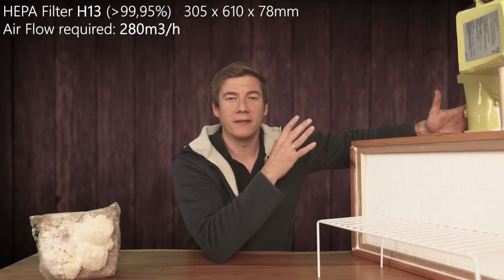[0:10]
Hey, it's Jens. Today I'm going to show you how to actually build a cheap DIY laminar flow hood.
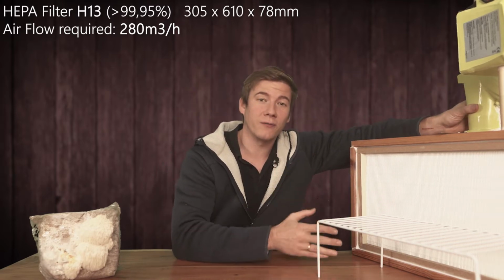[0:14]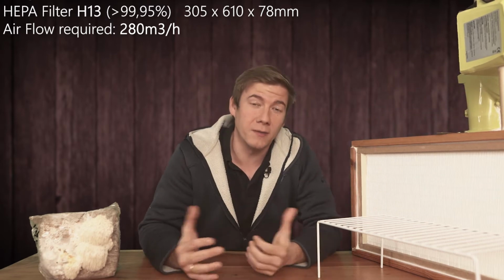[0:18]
In the last video, I covered some very important topics like how to choose the right components so that the laminar flow hood will eventually work. Because when the fan, for example, is not strong enough, you will have an expensive filter system, but still risk contamination. So today I'm going to focus on how to put everything together while keeping the costs as low as possible and make this thing work as well as possible.
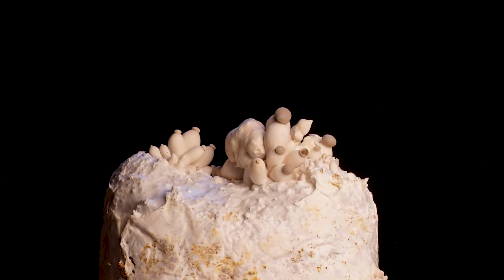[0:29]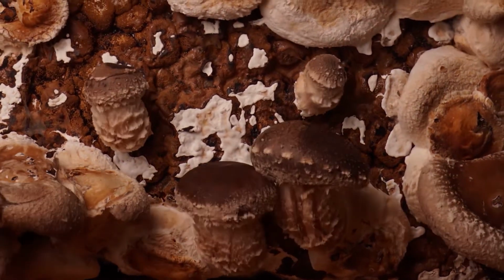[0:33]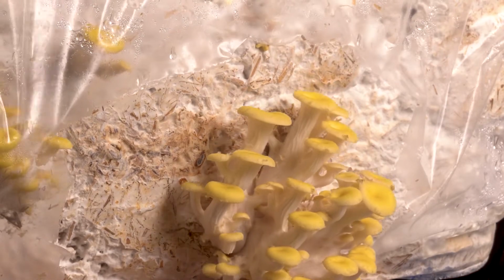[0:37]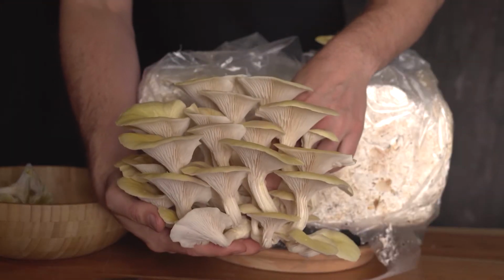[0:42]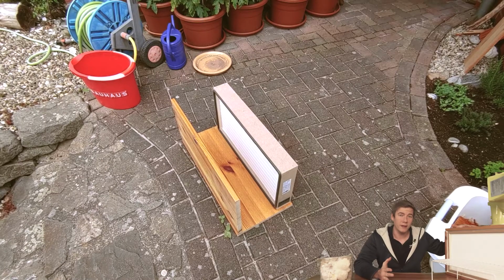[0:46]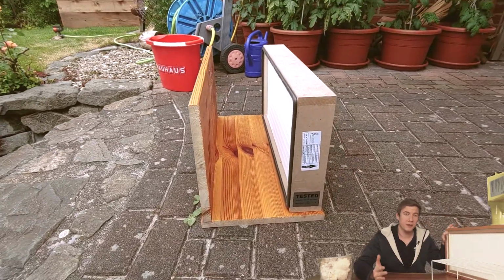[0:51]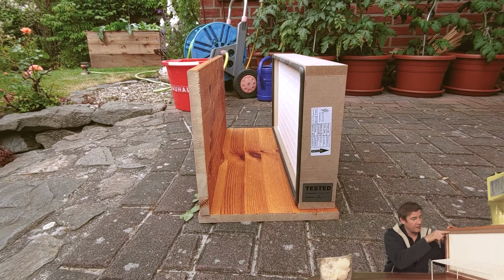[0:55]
For the case of the filter, I've used some old shelves out in my basement, so the case actually cost me €0. There's one thing that I have to point out, that is the sealing. Normally those HEPA filters come with a sealing, and here the sealing shows to the inside direction. Normally it shows to the outside direction. But then you need an additional layer of wood to press the sealing against, as it's shown in this example here.
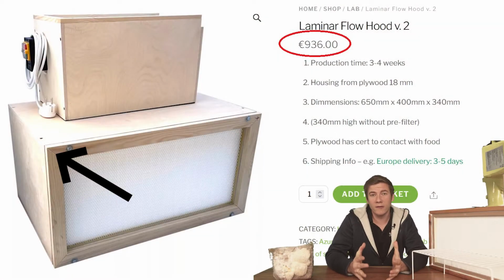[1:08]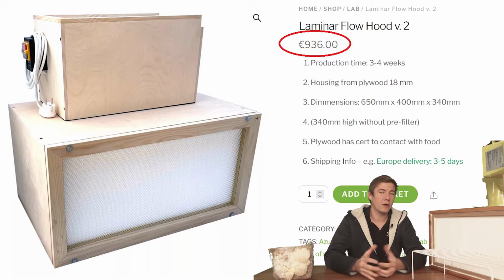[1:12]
Let's take a closer look at this laminar flow hood you can buy on the internet, and that costs around €1,000. And that is actually the reason why I have built this version. Of course, it does not look as professional as the one you can buy on the internet, but it works the same, maybe even better, because I have used a very strong fan here. So that's actually the reason for the video, because I don't, and I think you also don't want to spend €1,000 for a laminar flow hood of this size.
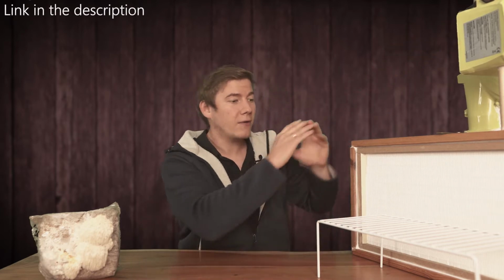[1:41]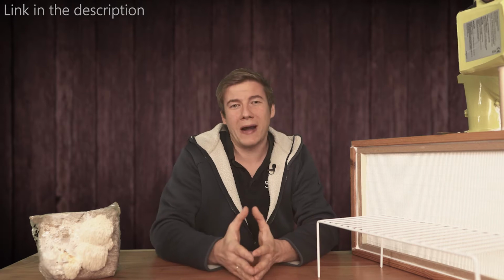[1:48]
That's why I've bought a filter for about €60 to €70 and a fan which costs about €100 on Amazon. So everything together will cost me under €200 for a laminar flow hood. I don't know, is that a lot of money? When you compare it to professional laminar flow hoods you can buy on the internet, I think it's a pretty good deal, and just 1 or 2 hours of work and you'll have your own laminar flow hood for under €200.
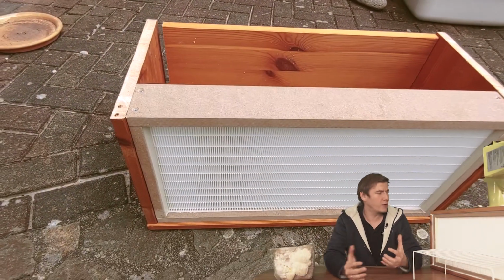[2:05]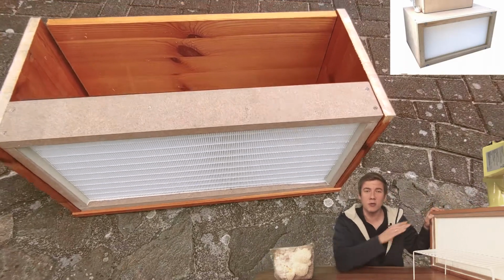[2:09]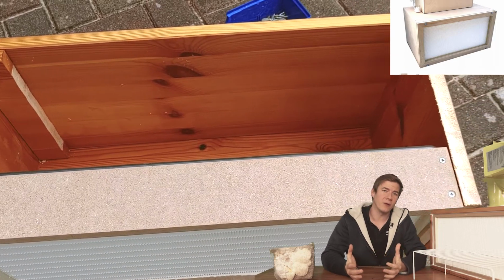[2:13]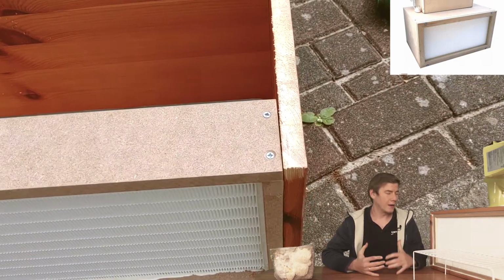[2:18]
So why did I put the filter in this direction? The answer is because I was actually just a little too lazy, and I think it is not necessary to build an additional frame because I've just used silicone to seal and glue everything together and it works the same. Yeah, it just saved me some time building this laminar flow hood when using silicone instead of a more complex construction. Let's talk about the basic concept of this laminar flow hood.
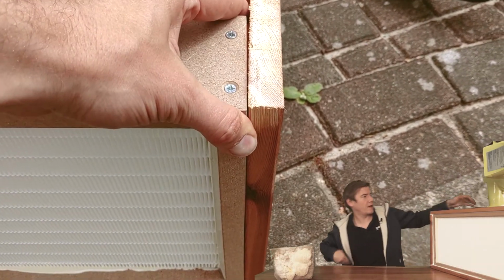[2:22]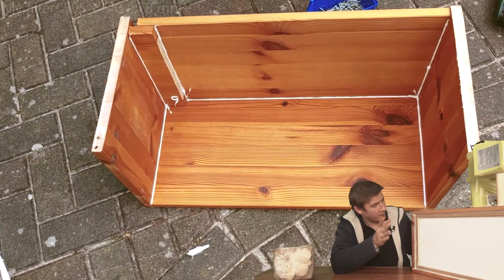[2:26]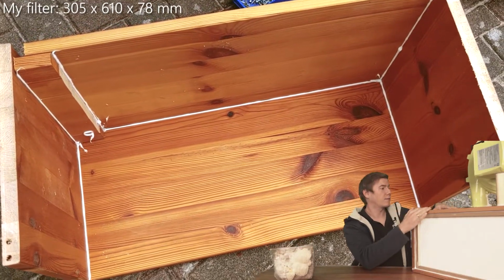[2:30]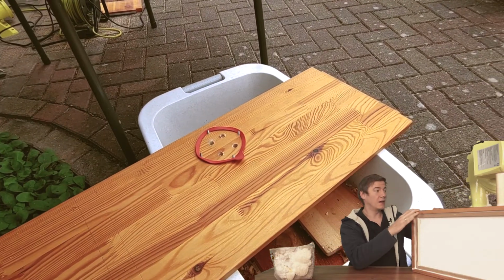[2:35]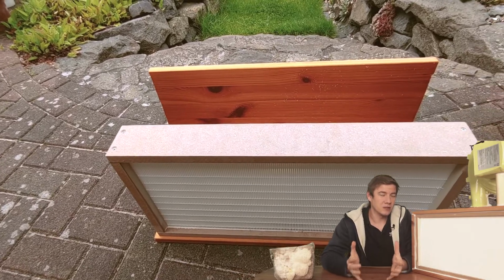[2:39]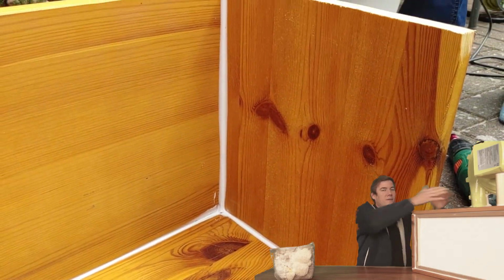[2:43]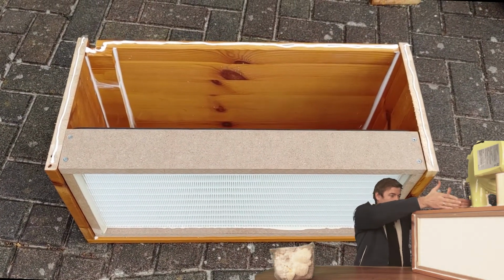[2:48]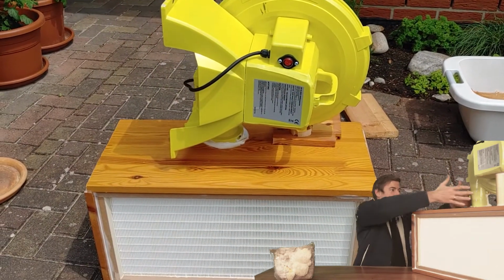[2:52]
Let's remove this for a second. We have here the filter with a depth of about 7 centimeters. So you need a base plate of about 30 centimeters so that there is enough space to mount the fan on top of your laminar flow hood. I've seen extremely huge laminar flow hoods on the internet, but I think you just need this much space. Just make sure that the fan has enough space here to push the air through the filter. So the gap between the filter and the back of your case should be bigger than the depth of the fan.
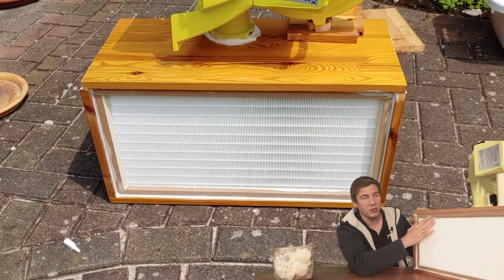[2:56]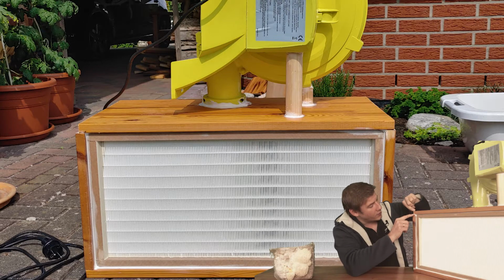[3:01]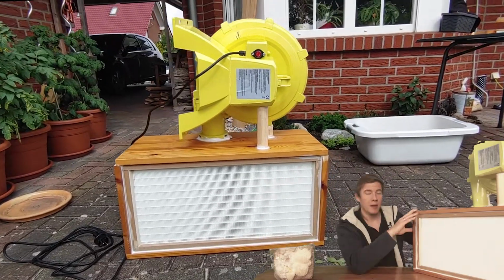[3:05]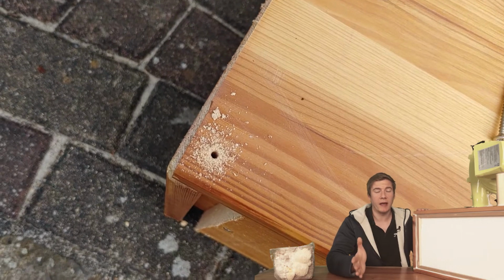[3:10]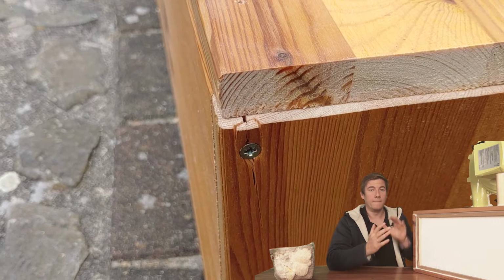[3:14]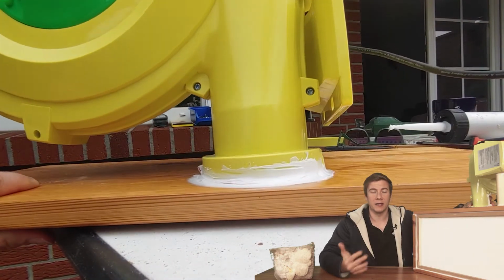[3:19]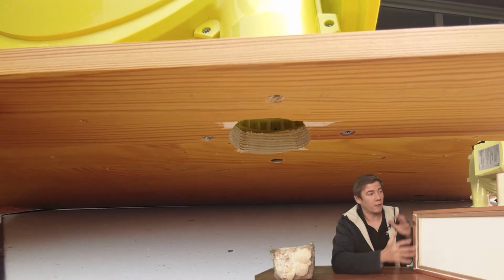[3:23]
For the frame, I've just measured the length and the height of the filter, which is 30 centimeters times 60 centimeters. So I've added a material thickness to the height and just cut out the wood for the frame. Before screwing everything together, I'd recommend to drill some holes depending on the wood you use. Otherwise, this happens and yeah, you have to seal everything again. Then I've cut a bigger hole on the top for the fan and sealed and glued everything together with silicone. So I've also used some screws, but silicone is really the most important part of this laminar flow hood because this prevents the flow hood from leaking.
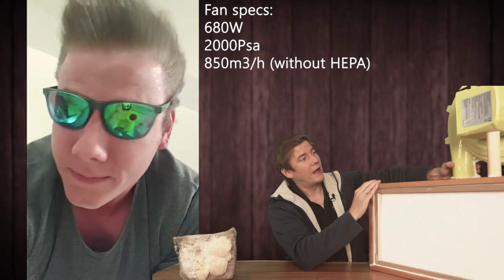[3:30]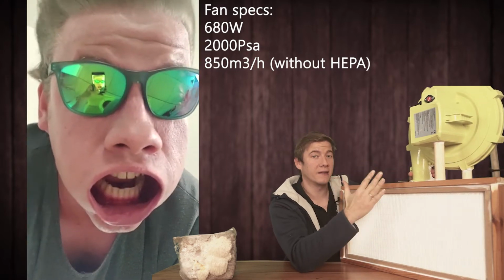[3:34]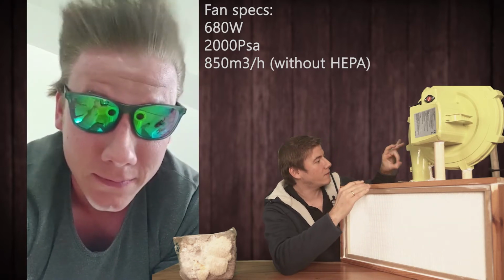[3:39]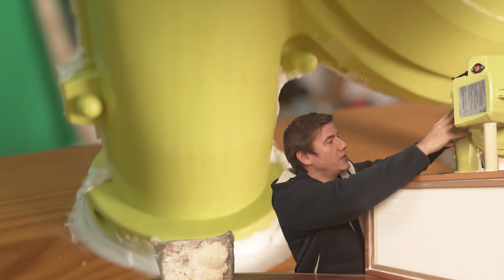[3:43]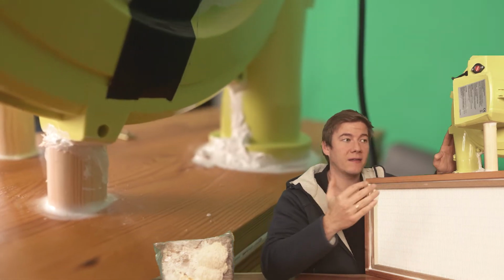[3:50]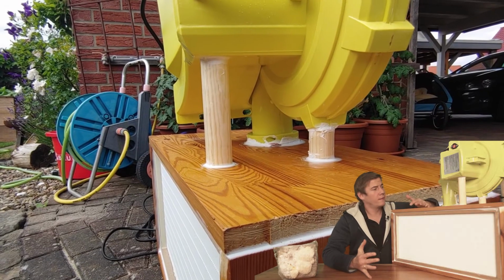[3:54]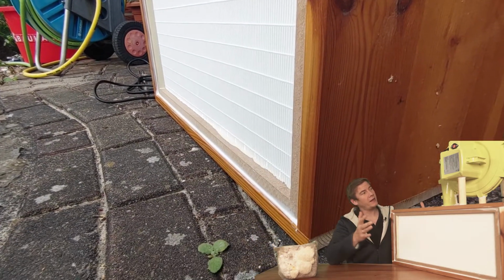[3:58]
A few sentences about the fan I've used here. This is actually pretty cheap. This is actually made for a jump house for kids. But the advantage is that it's a radial fan, it is really powerful, and because it's made of plastic, it is actually pretty cheap. But because of the cheap housing, I had to seal everything again with silicone. Because afterwards, when I did my first test and I used a lighter to see if there are some leaks, there were a lot.
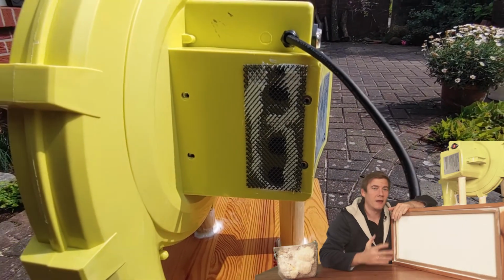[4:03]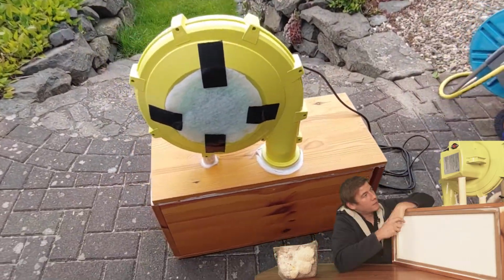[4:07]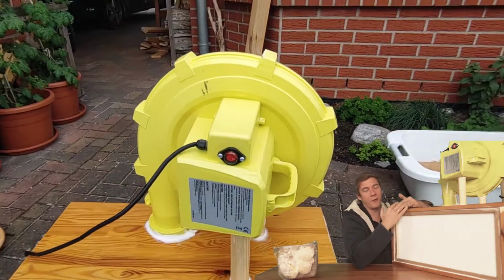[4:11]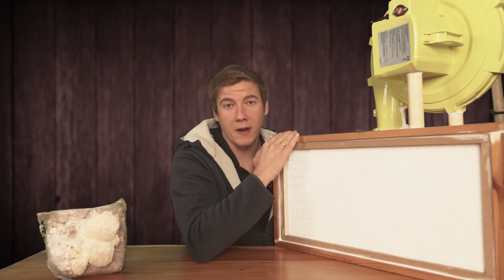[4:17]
One reason to make the whole case even bigger is that you might want to have a box around the fan of your filter, because the fan is extremely loud. Let me just demonstrate. It is powerful, it is loud, but for me it's okay. Maybe I'll build a case in future, but yeah, it works great and that's the most important part for me.
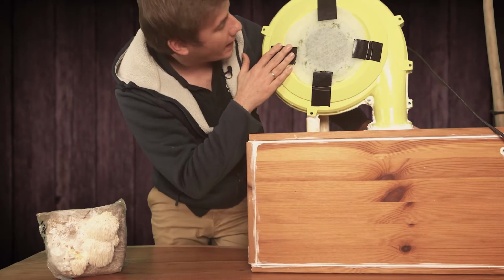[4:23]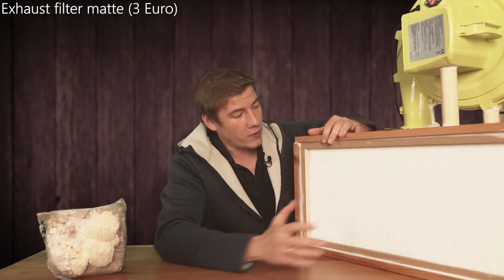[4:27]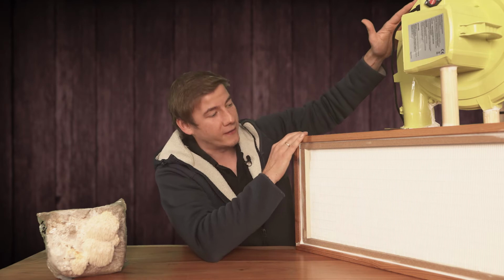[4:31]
Let's take a look at the back side. There you can see that I have added an additional filter mat, and this is actually very important because we want our HEPA filter to last as long as possible, and without the pre-filter there will come a lot of dirt and dust inside, and the filter will need to be replaced maybe after 1 or 2 years, and with the pre-filter maybe it will last a year longer.
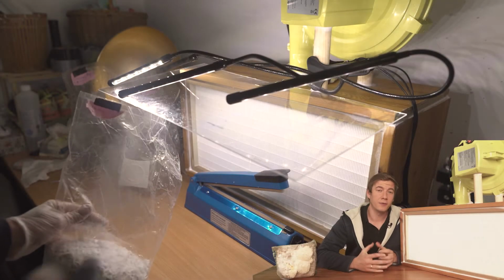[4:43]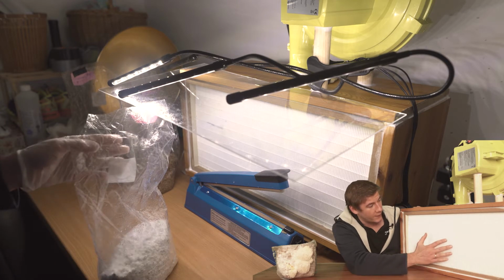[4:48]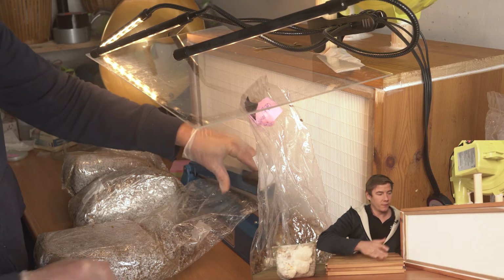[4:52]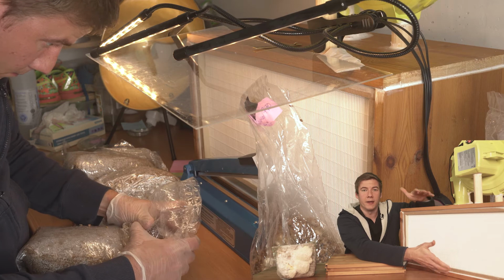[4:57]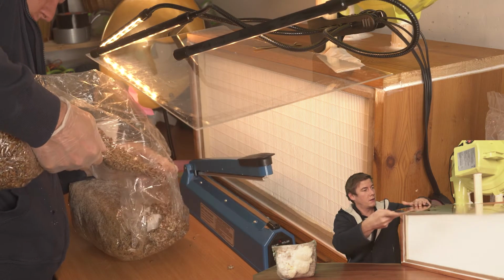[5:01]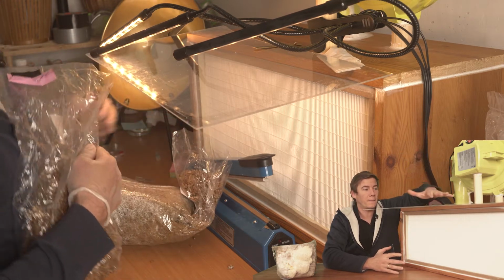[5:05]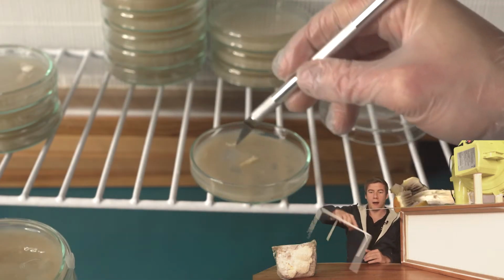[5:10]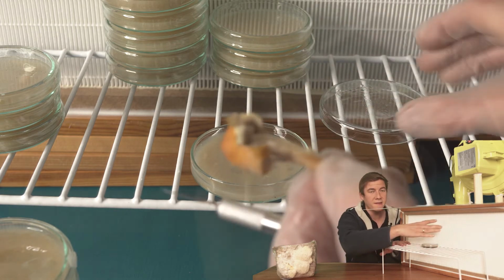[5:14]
And here are a few tips on how to increase the working area when using a 30 times 60 laminar flow hood. The first thing is that I use some wood just to lift it up a little so that the working height is bigger. Then normally I add this windshield here, just to prevent any dust and dirt from the top to enter our working area. And when doing agar work, I use this table here just to center the petri dishes inside the laminar flow hood.
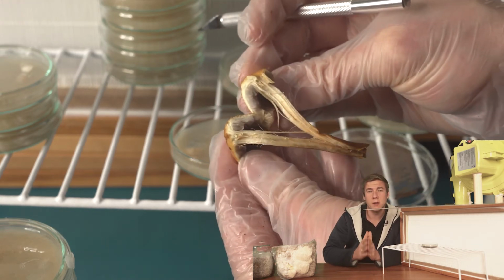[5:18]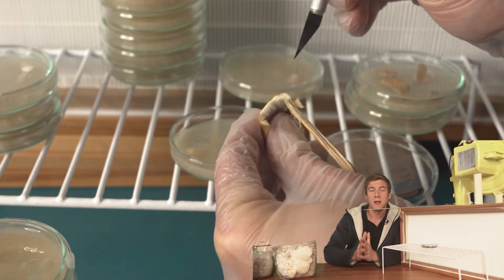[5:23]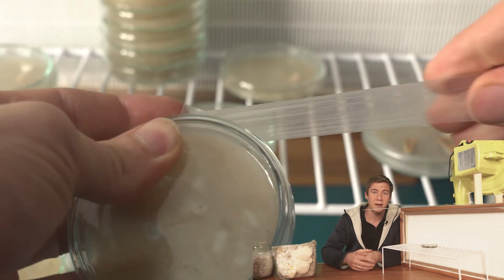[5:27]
I really hope that you think that this video was helpful when you think of building your own DIY, as cheap as possible laminar flow hood to grow mushrooms at home. If there are any questions, feel free to leave a comment below. I'm gonna help you as much as I can so that you'll also have no contaminations in future.